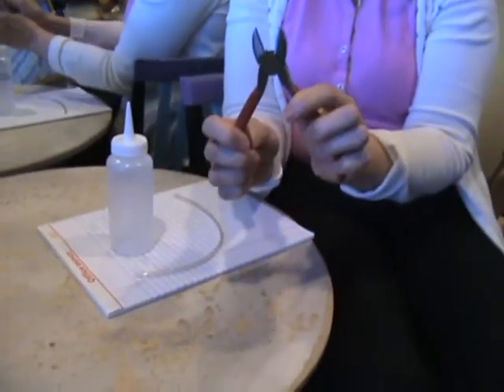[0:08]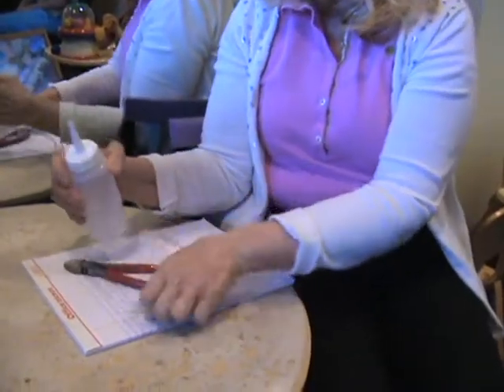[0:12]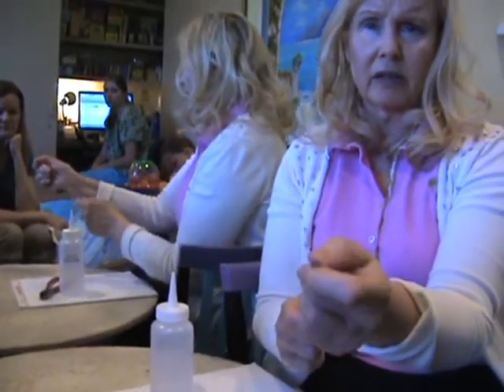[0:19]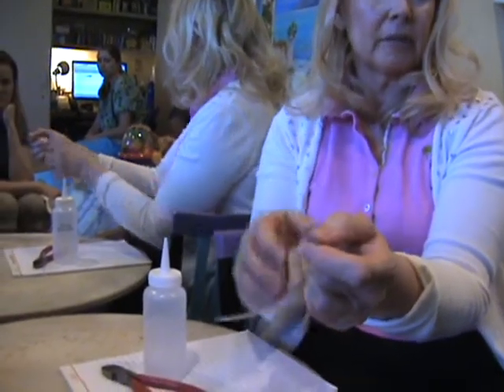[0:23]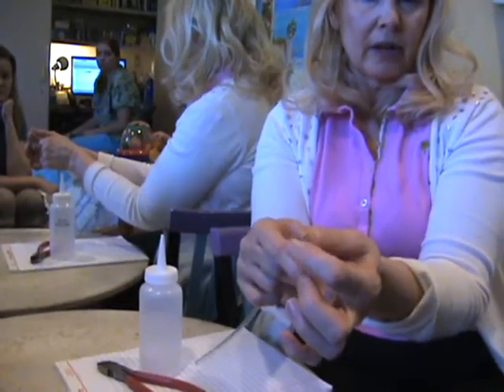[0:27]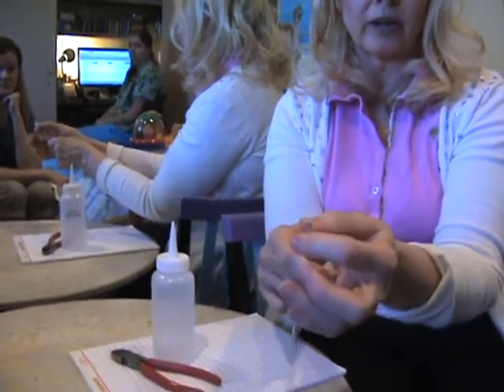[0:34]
All right, so what we're gonna do, these wire pliers work better than scissors because the scissors are not quite sturdy enough. And the tubing, you can get any size tubing from the hardware store. This is 1/4 inch diameter, and I think it is, does that look like 16th inch wall or 8th inch? That you can get sturdier straw at the hardware store. The tubing is for the ice makers. Okay. So you can tell them what dimensions you want, they can order it. I can take that. Yeah, and I'll give you extra of this.
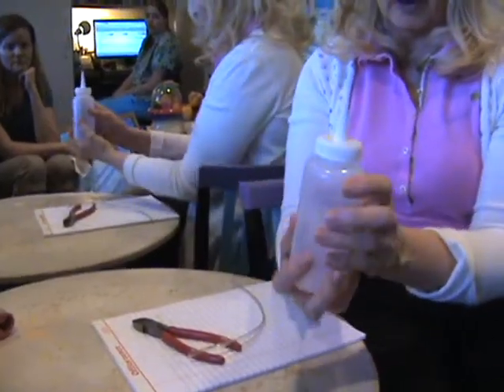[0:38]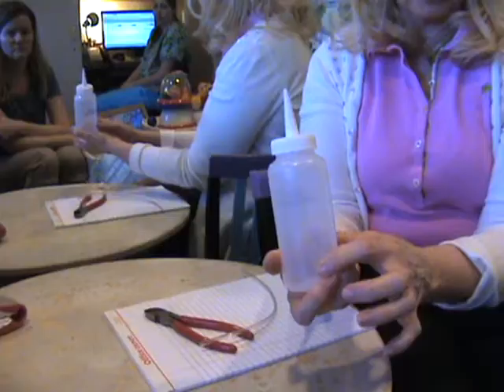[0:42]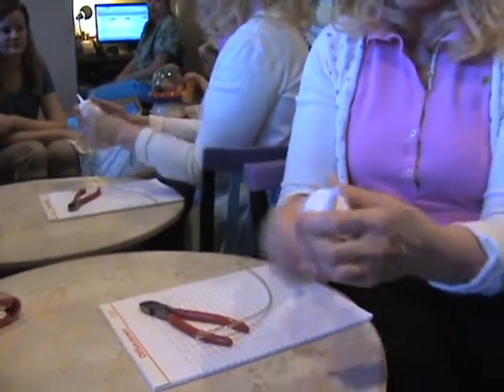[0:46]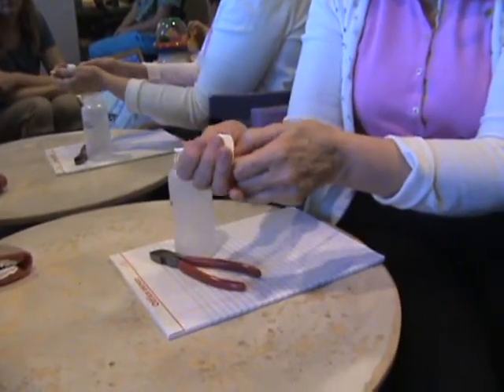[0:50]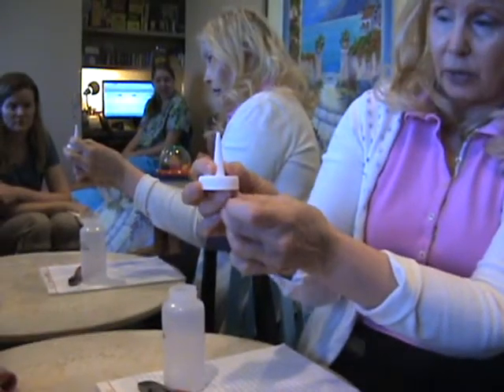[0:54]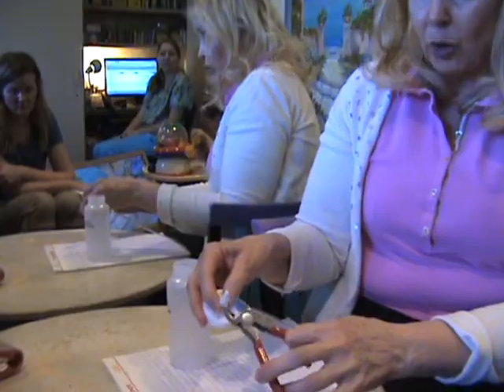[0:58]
And then this is from Sally Beauty Supply. It's never been used. It is a food grade plastic. It's marked by ounces. This has a really tight seal, which is why I like it better than the Honey Bear bottles. And so what I do to get an idea of how far to put this in is I stick the straw in it. I look at the light, and I can see about how far down it is. You want to cut it above wherever the straw is the first time, because you want this to barely fit through. So you can see where the straw is.
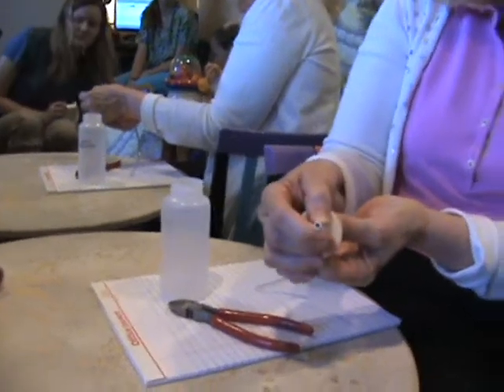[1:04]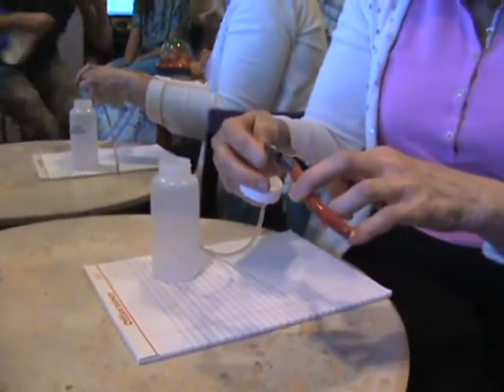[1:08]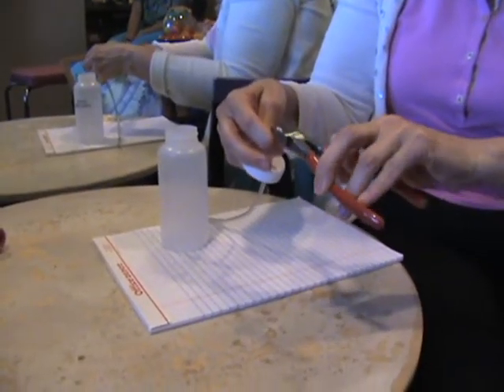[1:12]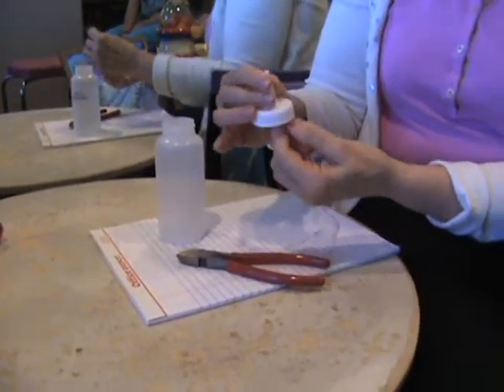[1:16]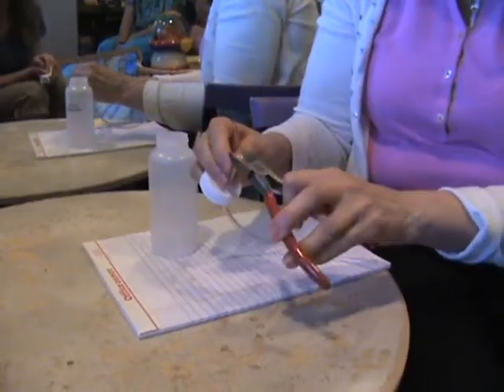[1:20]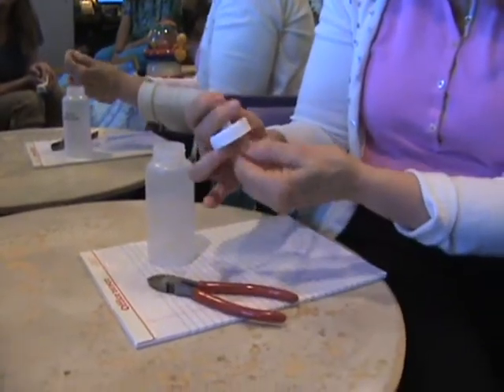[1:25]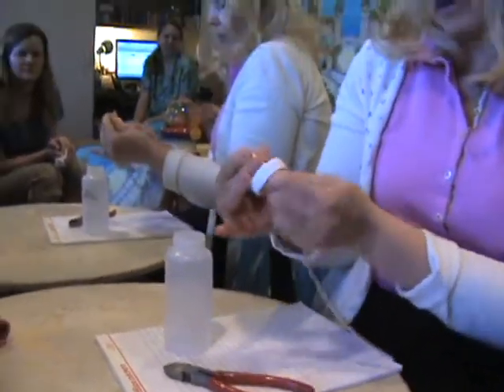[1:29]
Can you see it in there? Mm-hmm. So I've got to cut it a little bit bigger. So I'm going to go down a little bit more. You just don't want to make it too big. If you make a mistake and you make it too big, you can put medical tape on the outside of it. That's waterproof so that it'll seal it really well. You want this to barely fit through there. So I just know I'm going to make it too big. Well, okay, so it's coming up.
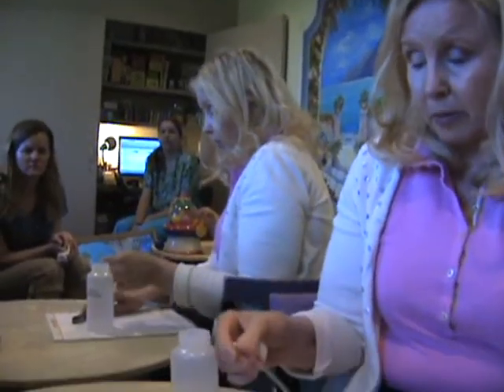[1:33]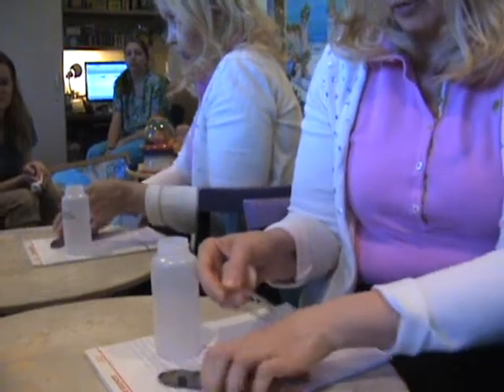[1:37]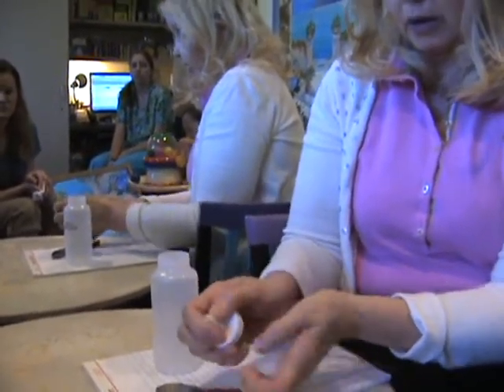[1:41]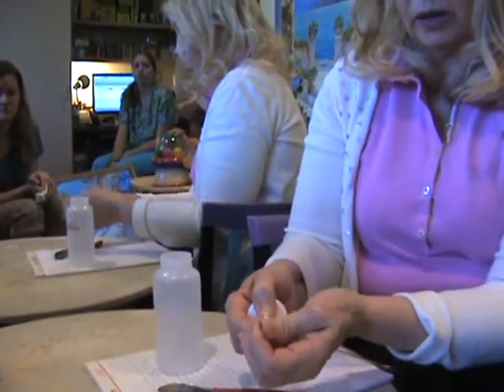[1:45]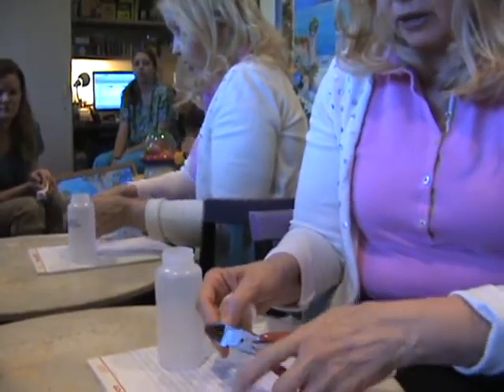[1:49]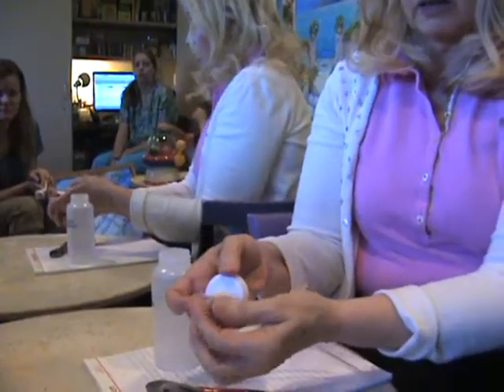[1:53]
Now, another thing you can do to make it thread through a little easier is just cut this on a slant, just till you get it threaded, and then level it off so that it's not going to poke him. Okay, so now it's going to barely come through. It's like really super tight. You want it as tight as you can possibly get it. You only need about 1 inch of this sticking up from the end. If you have more than that, it's going to go too far in his mouth.
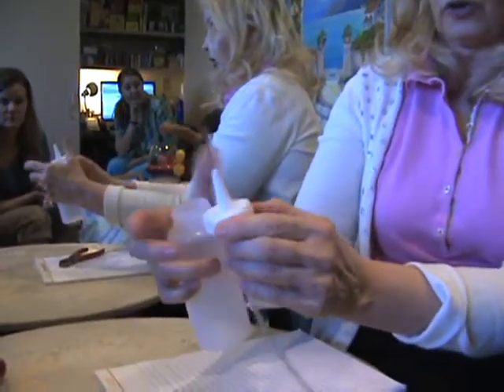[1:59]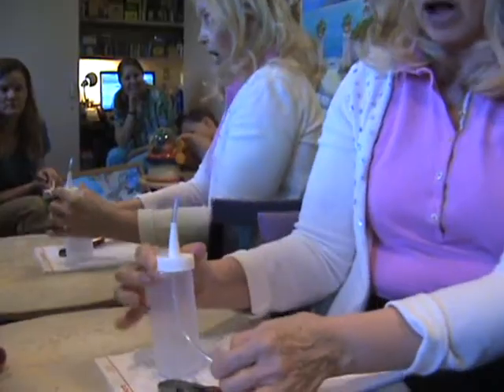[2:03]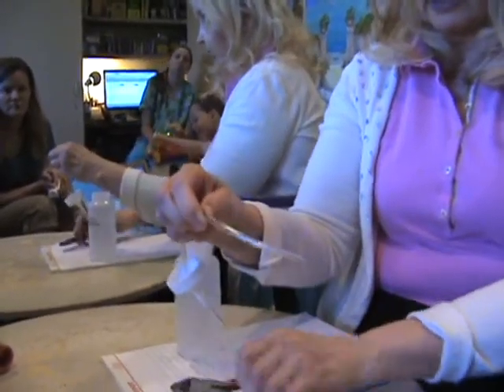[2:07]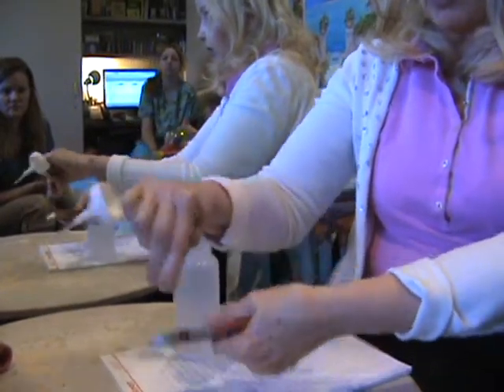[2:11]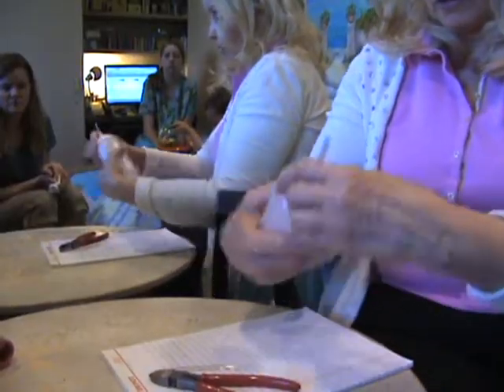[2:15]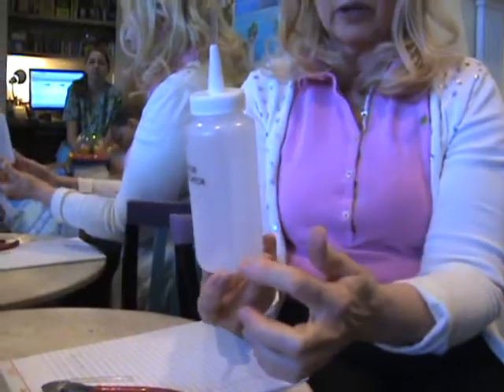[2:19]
And then when you put the lid on the shoulder here of the little bottle, you can see how far down the tubing needs to go. I would keep the end of it cut on a slant so it doesn't get stuck on the bottom wall. It's okay if it's too long. I wouldn't make it too short. Okay, so then you just check it to see, okay, it's all the way in. Now, whatever liquid you put in here, you have to be sure the tubing end is in the liquid, because if it's like this. Yeah.
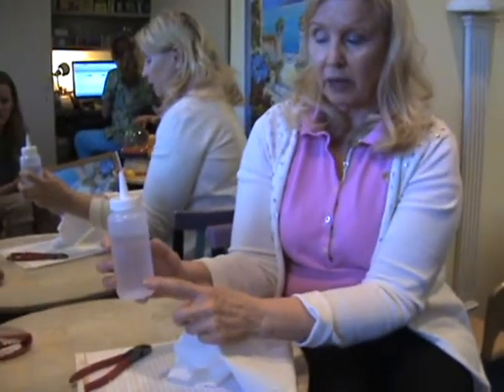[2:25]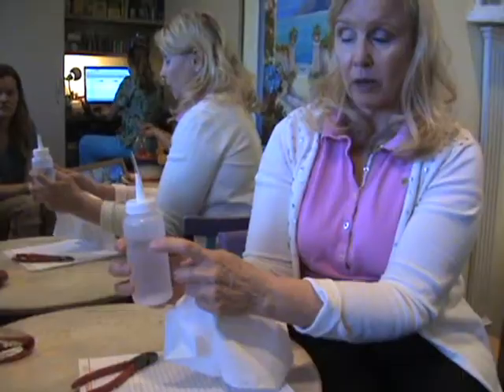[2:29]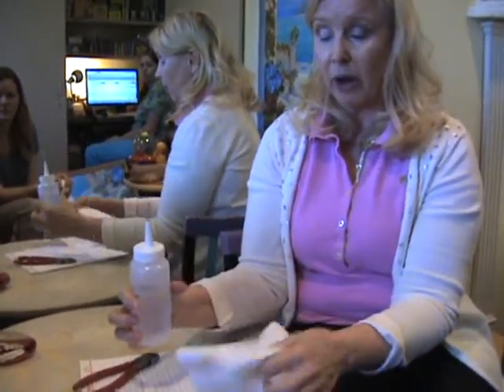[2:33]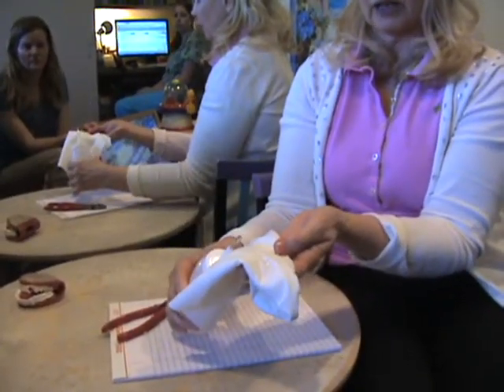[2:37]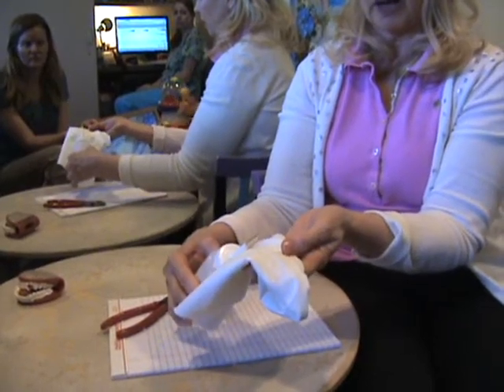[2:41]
Okay, so when you have fluid in here, you can tell how many ounces it is, or you can weigh it, but it's marked by ounces. To see how fast it's going to flow out before you present it to the person, press it, and it shows you how little pressure you need for it to come up. Now, what's nice about using this kind of tubing is you can actually see it as it comes up.
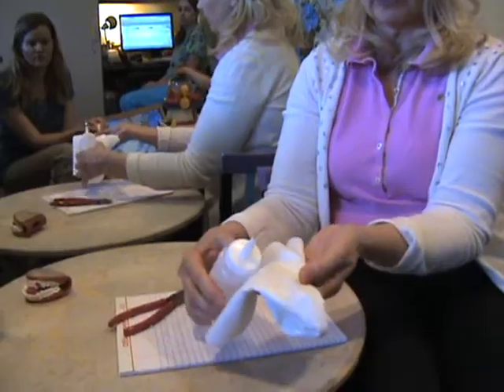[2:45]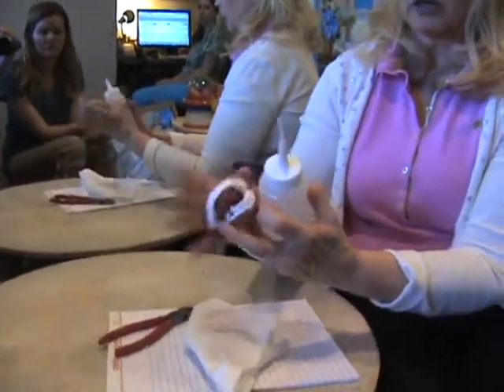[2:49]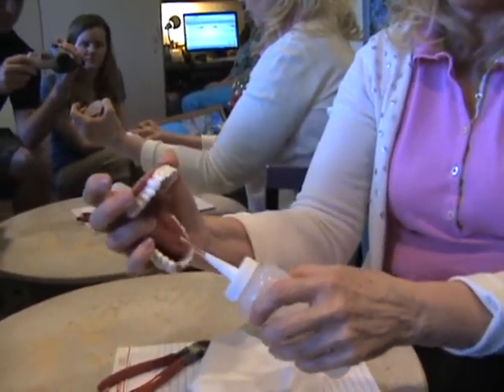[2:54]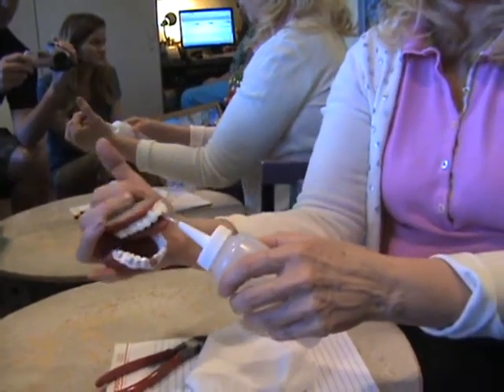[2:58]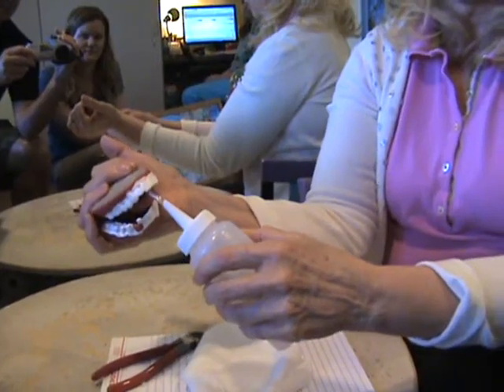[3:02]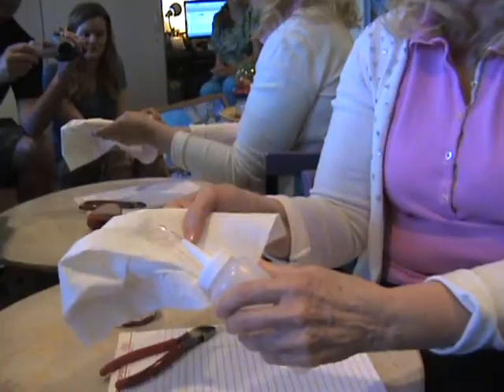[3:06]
And when you're presenting it, I would keep it by the upper surface of the teeth, not the lower. So you want to go under the top teeth, because if you go down here, it'll make their tongue stick out. So if you go by the top teeth, their lower jaw and lip will close on it, and you can get suction from the tongue in 1, 2, 3, press. I won't do it in this mouth, but you're going to do 1, 2, 3, press. And I would count out loud so they know when it's coming.
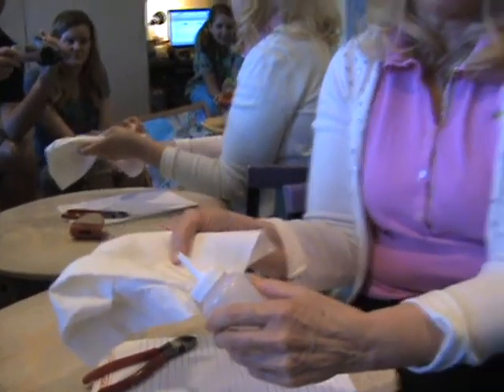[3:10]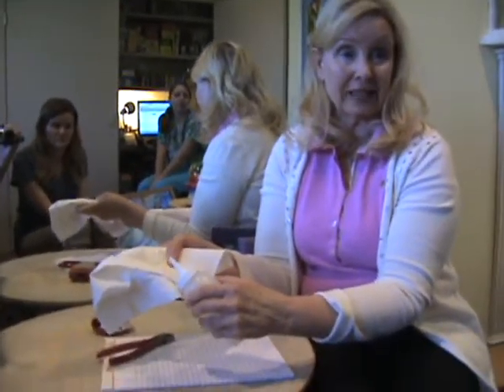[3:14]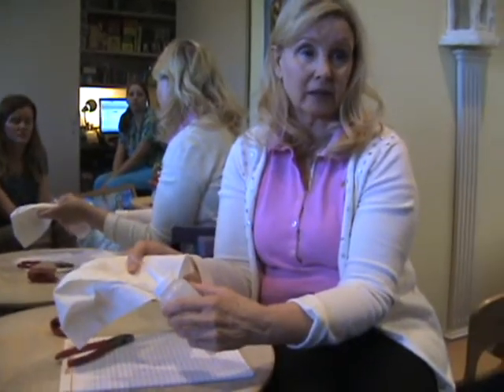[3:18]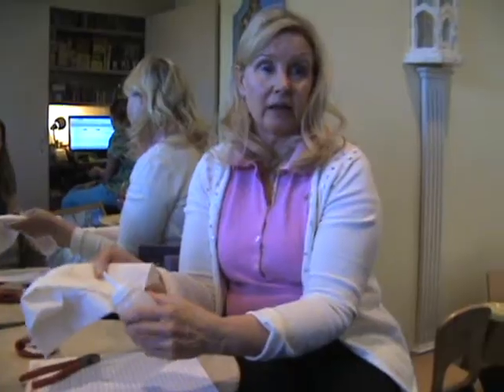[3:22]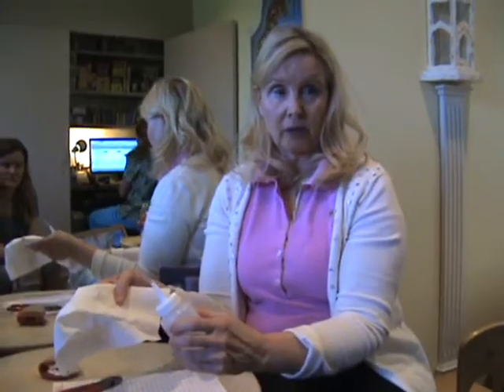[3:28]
If Dominic's able to pull it in all by himself, that's great. I wouldn't do more than 2 sucks at a time until he learns to control the amount that's in his mouth. Yeah. So 1, 2, 3, press. 1, 2, 3, press. And then when you're presenting it with him, support his head so his nose does not point up. You want his nose pointing down a little bit so any excess comes out the front of his mouth. All right, so let's try.